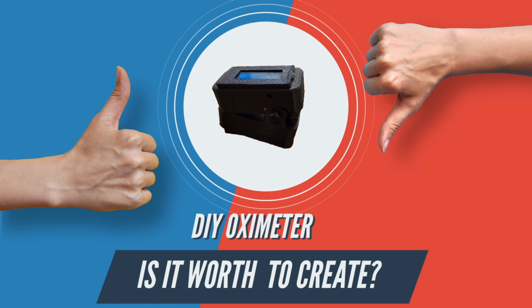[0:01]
Today we are creating a pulse oximeter by using the MAX30102 chip. So let's get started.
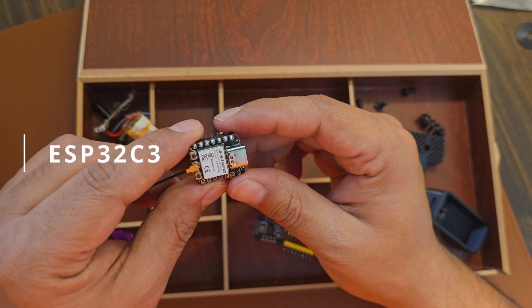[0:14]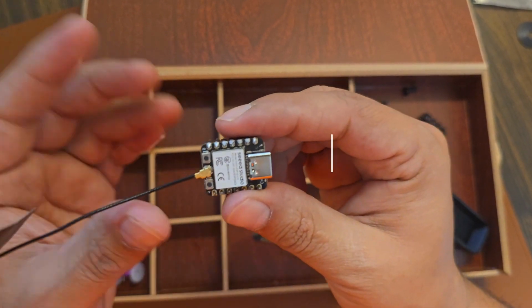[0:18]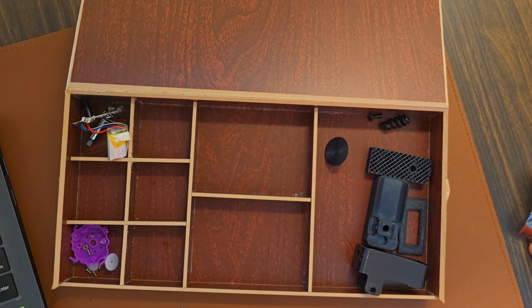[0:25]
The first component is the C3 Xiao chip, a microcontroller which is compatible with the Arduino board, and you can program it through Arduino as well as MicroPython. I am using it because it's very small and compact.
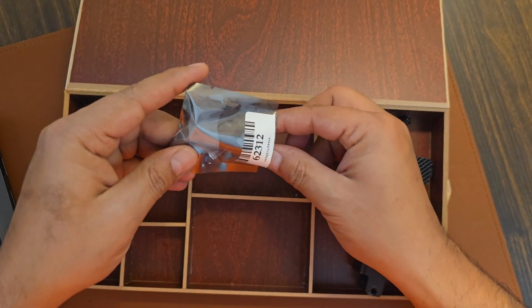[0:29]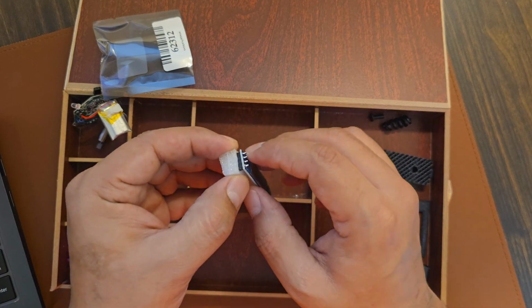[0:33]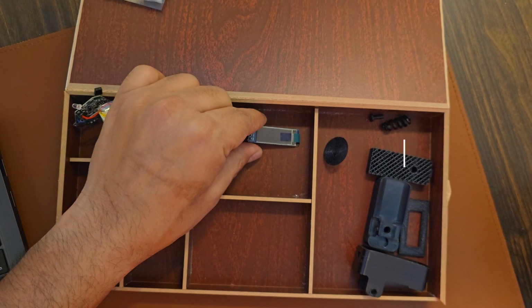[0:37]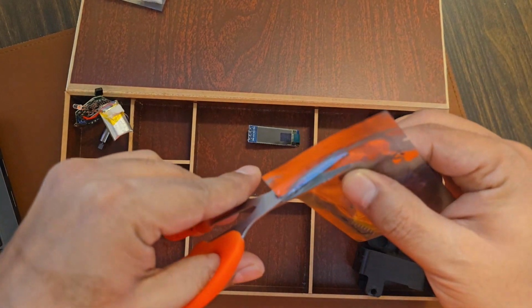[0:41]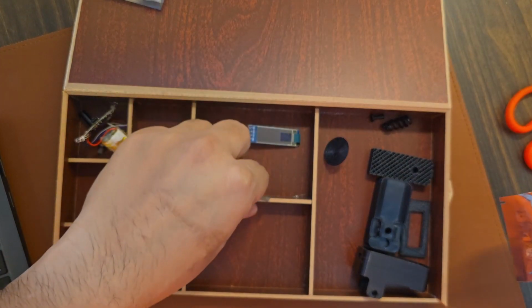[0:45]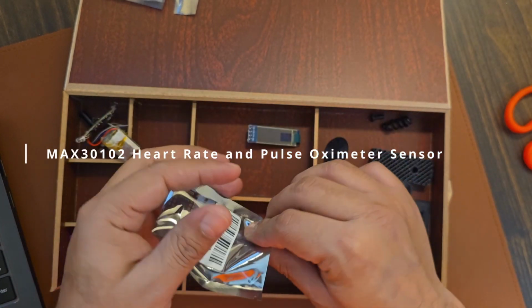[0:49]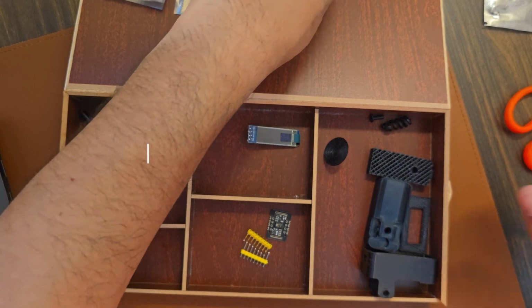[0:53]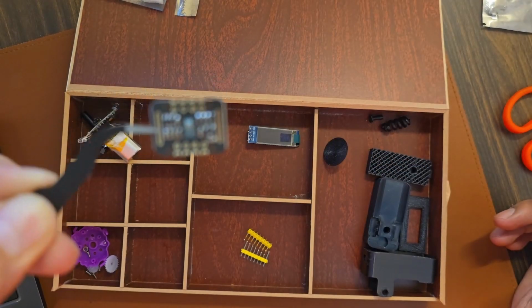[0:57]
Our next hardware is an OLED display, which is 128 by 32 in size. It's used for displaying any content from coding. And our third and main hardware is the health sensor, which is the MAX30102 heart rate and pulse oximeter sensor, which is used to read from your finger your heart rate and the oxygen level of your body.
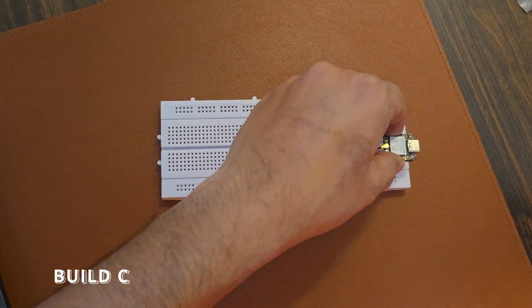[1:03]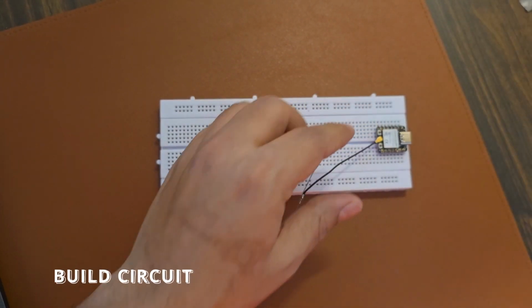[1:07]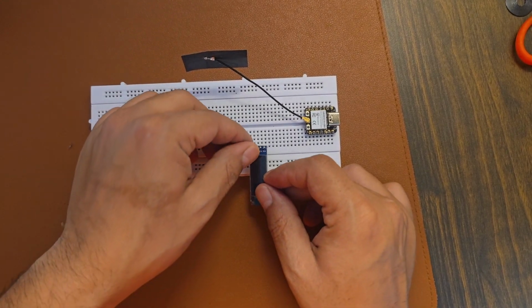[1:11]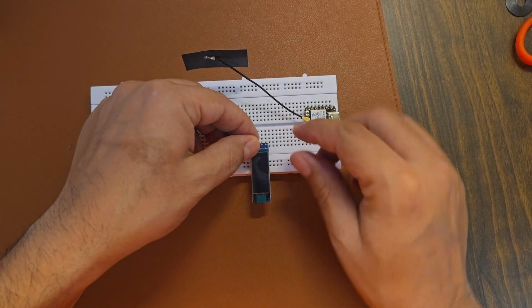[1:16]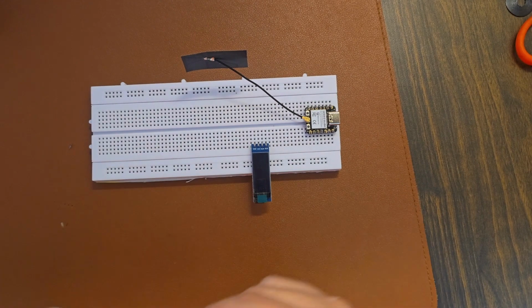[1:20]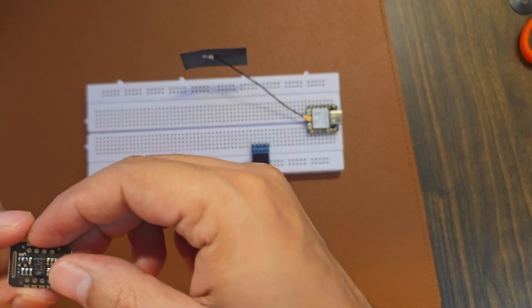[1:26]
Let's build the circuit of all of these devices so that they can communicate with each other. I'm taking a breadboard which is fitted with the Xiao chip and the OLED display. And then add a MAX30102 sensor so that we can read the sensor data and show that data over the display.
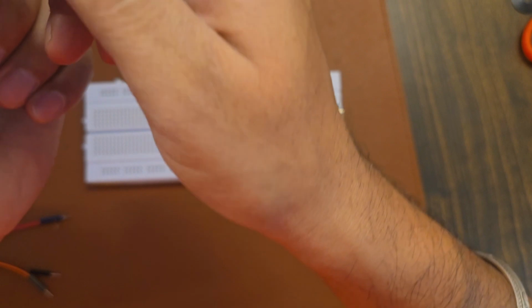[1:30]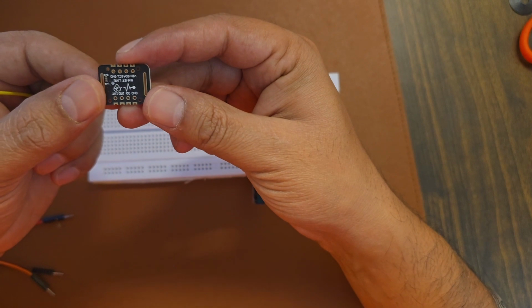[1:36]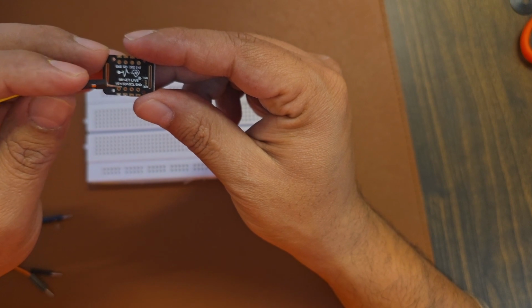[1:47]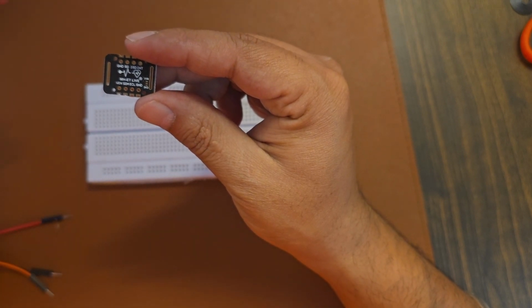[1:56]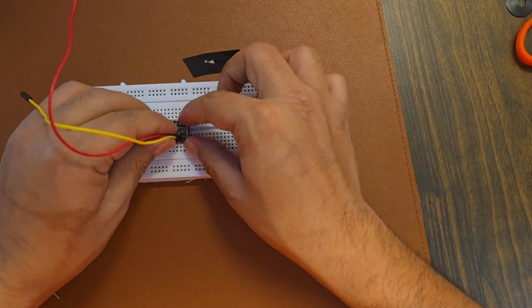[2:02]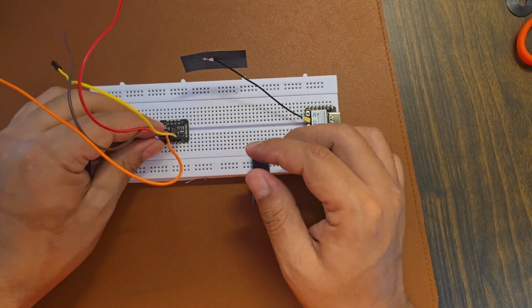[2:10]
So I'm taking some jumper wires, and I want to connect those jumper wires with the specific ports, you can say pins, and we do have four pins on this MAX30102 chip. I am adding the jumper wires first to the MAX30102 chip. Yellow for SCL, red for VCC, orange for SDA, and brown for ground.
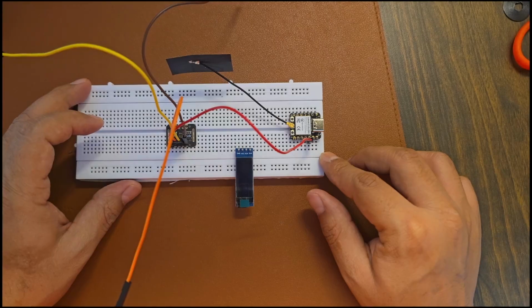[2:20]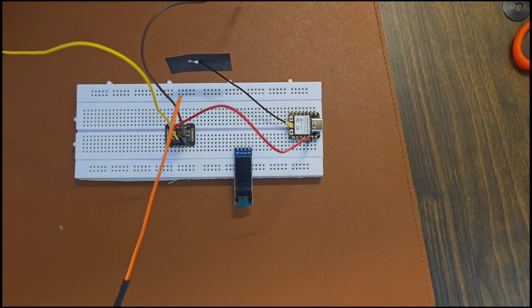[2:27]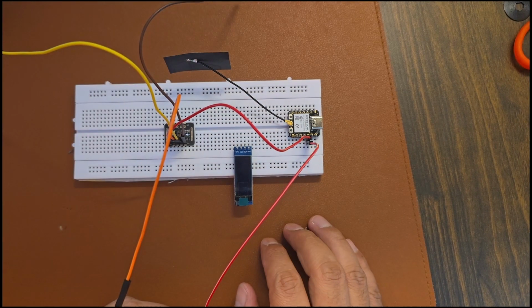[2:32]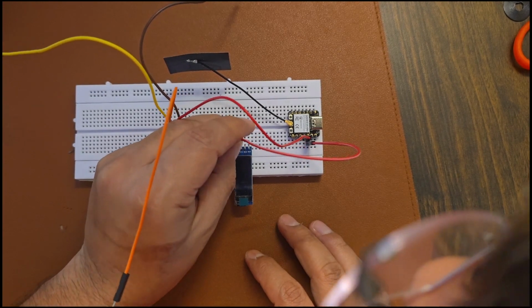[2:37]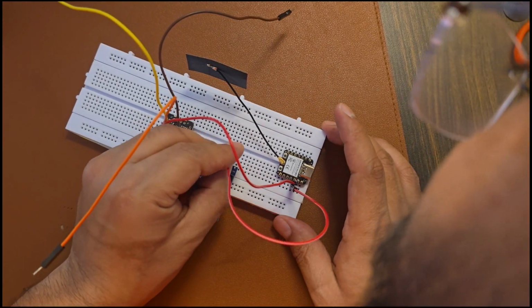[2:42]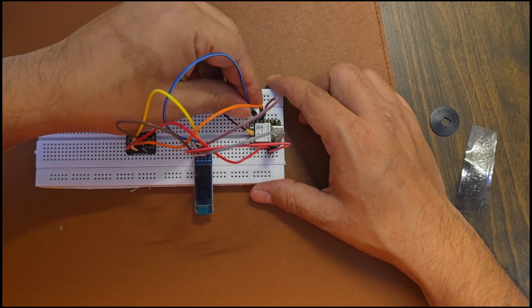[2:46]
Then connect the pulse sensor with our Seeed Studio Xiao microcontroller, the 3-volt pin to VCC, and the orange and red pins to the VCC of the display as well, and the other display wires which are VCC, SDA, SCL, and the ground pin. Let me finish all the jumper wire connections so that we can start working further with the coding part.
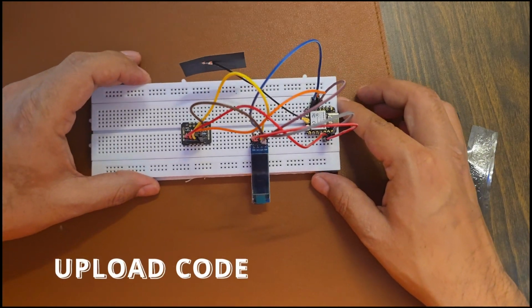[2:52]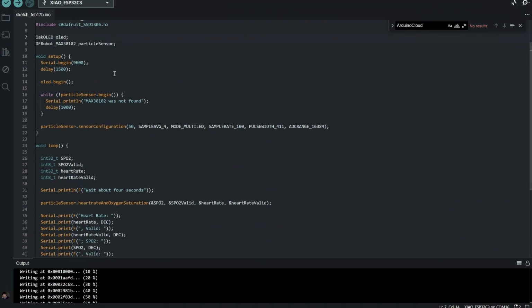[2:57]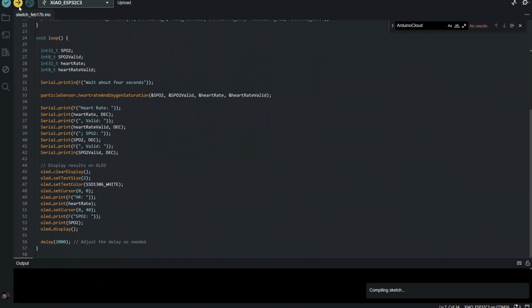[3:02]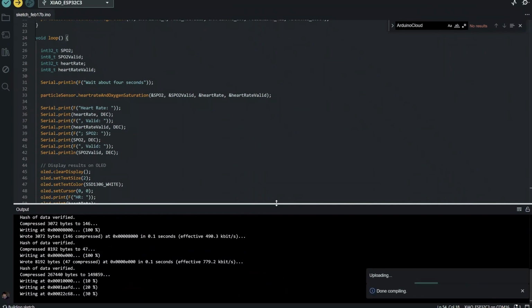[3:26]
So let's upload the code to our Seeed Studio microcontroller using the Arduino IDE, and I am uploading the code by clicking the upload button. I will share this code in my Git repository, and you can find the link of the Git repository in the description. You can copy paste it. You can select the board and pins in Arduino so that you can connect with the Arduino using a COM port, which is USB based, and just hit upload, and it will upload your code directly to the microcontroller, and you can see the execution there.
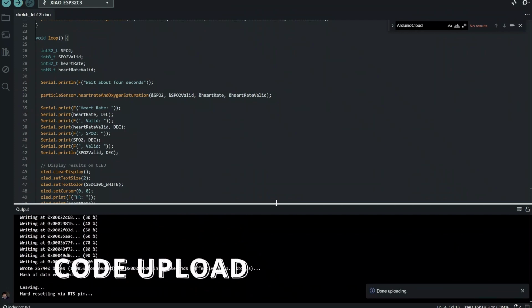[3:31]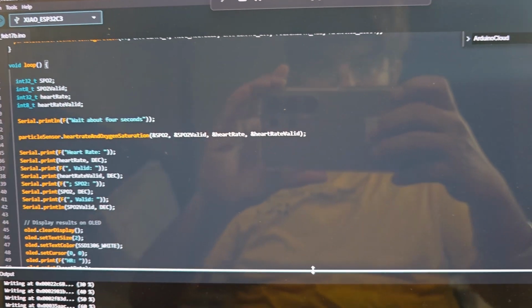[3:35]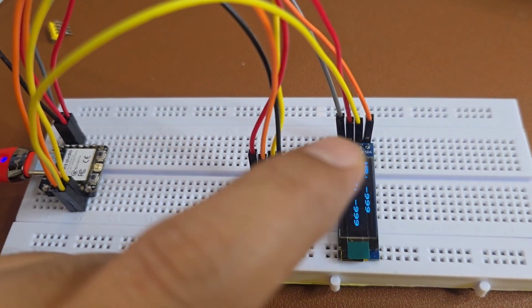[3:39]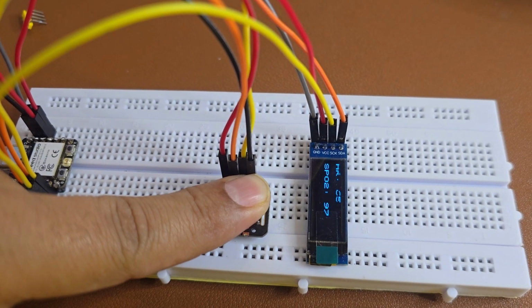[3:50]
So let's see the execution in action. I uploaded the code to the microcontroller, and you can see the display showing the heart rate and SpO2 value, -999 if there is no finger there, but whenever I add my finger, it gives me the heart rate and the SpO2 value, which is the oxygen value for my finger, and you can say my body.
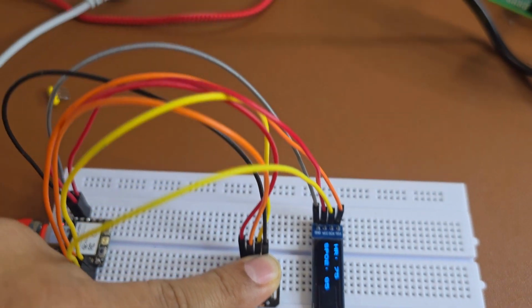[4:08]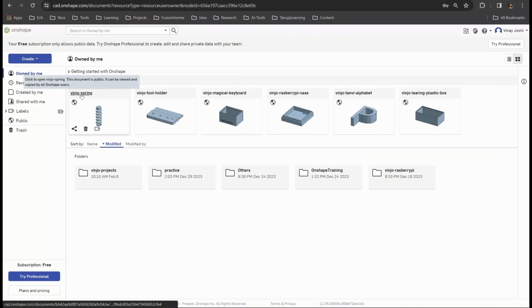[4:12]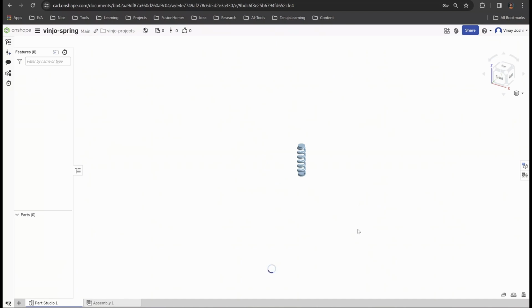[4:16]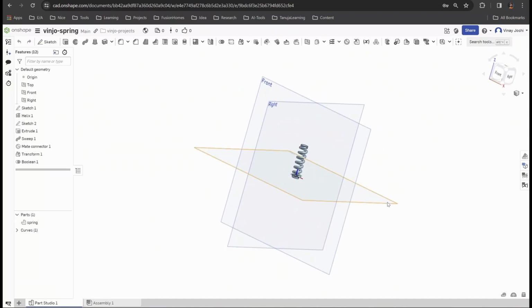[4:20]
I was not able to find the spring used on this part, so I 3D printed the spring as well on my 3D printer, the Ender 3 S1 Pro. Before that, I designed an STL file in Onshape. You can find all the STL links in the description, which is part of the blog.
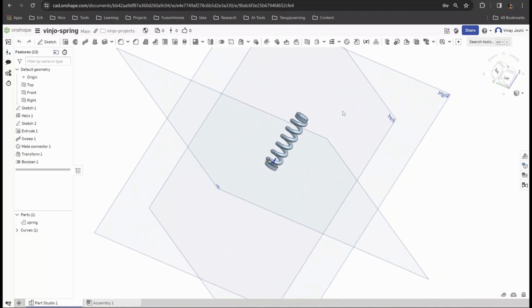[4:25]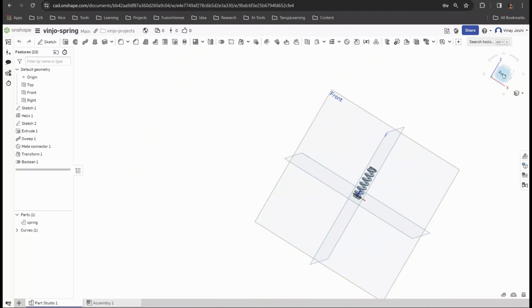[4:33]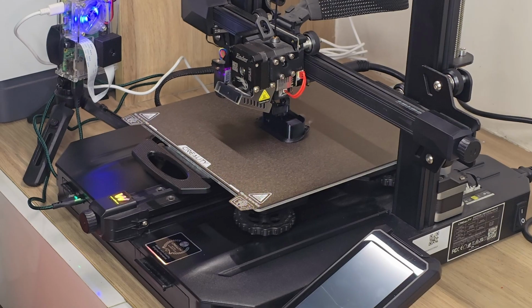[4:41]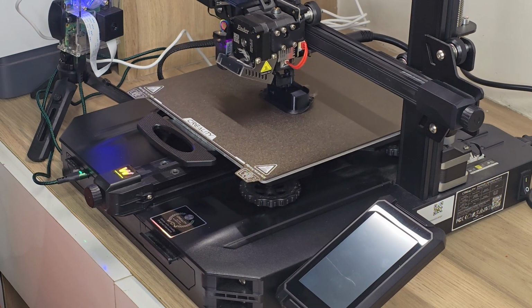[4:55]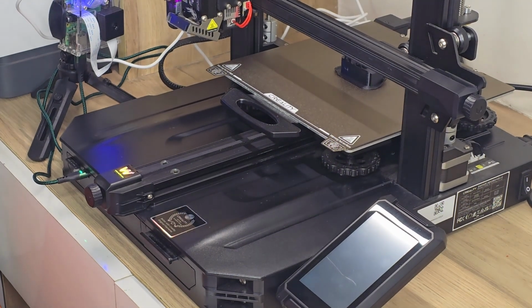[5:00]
But yeah, if you want the spring STL file, you can directly go to the Onshape library and get my STL file, or you can design it or modify it as per your 3D printed enclosure part for these electronics so that they look good, and we can use this in a proper way. Here's my part printed completely, and before using it, I need to clean up all the parts, so I do have some techniques to do it. So let me fast forward my video so that it will not take much time for you to look at the whole process.
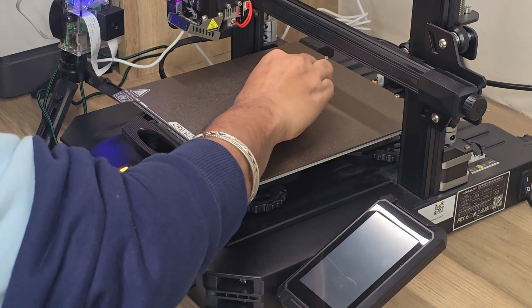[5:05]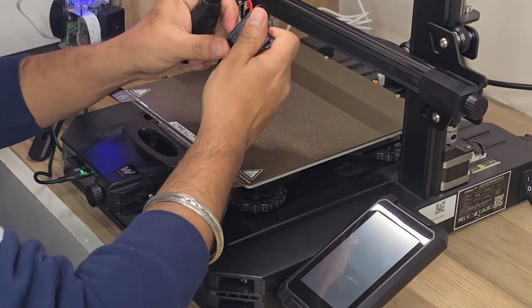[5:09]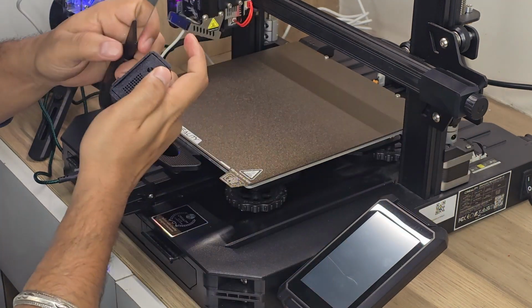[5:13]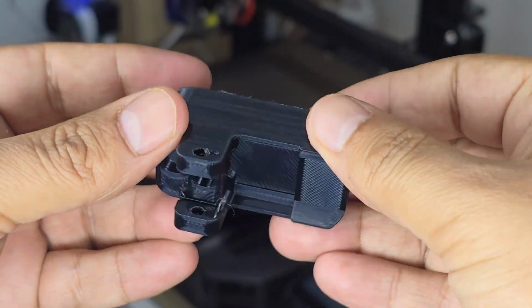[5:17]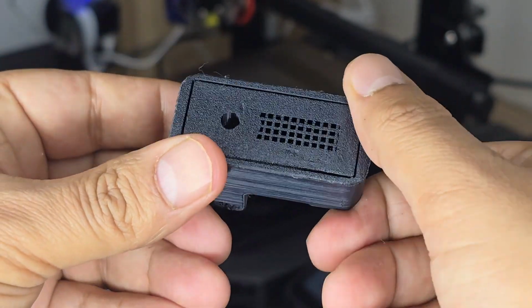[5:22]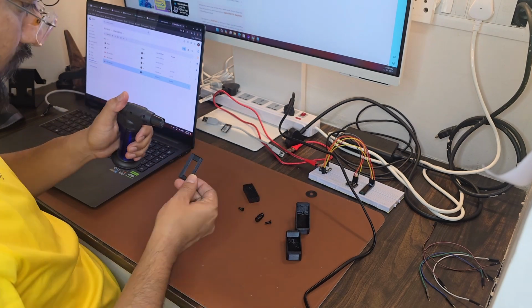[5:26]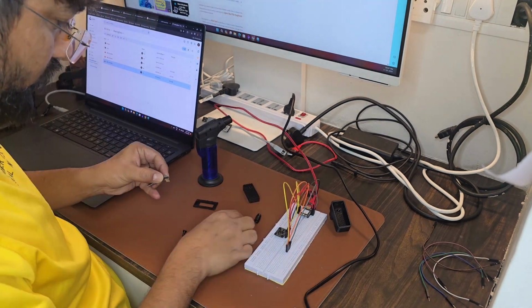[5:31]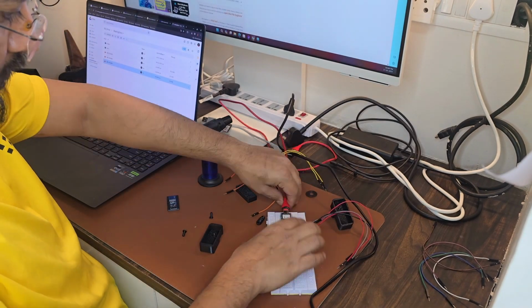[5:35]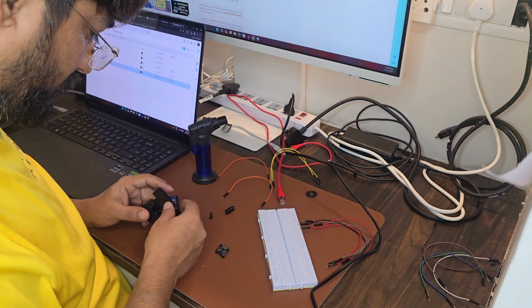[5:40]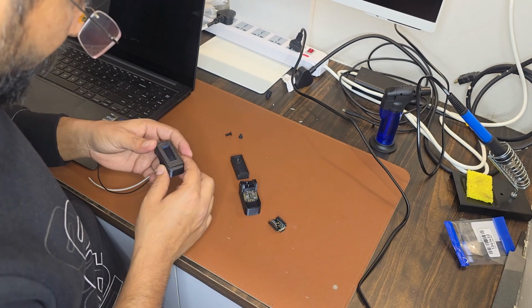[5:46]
So let's start the assembly of all of the parts which we 3D printed. First, I need to clean them with my gas lighter so that all the feathering which comes along with the 3D printing will be removed, and our 3D printed case looks very shiny and fine. I do that for all of the parts and then remove all of the parts from my breadboard and add them to fit over those.
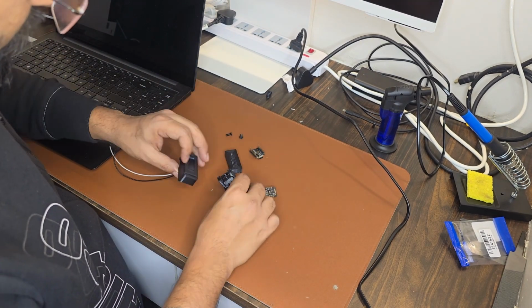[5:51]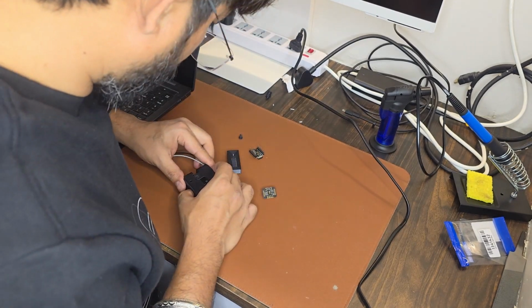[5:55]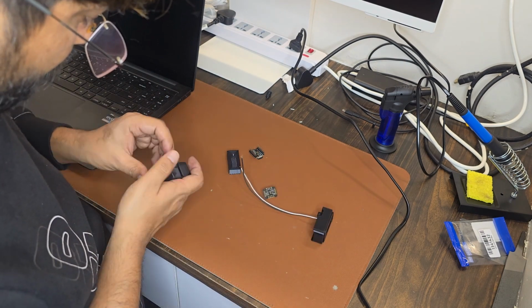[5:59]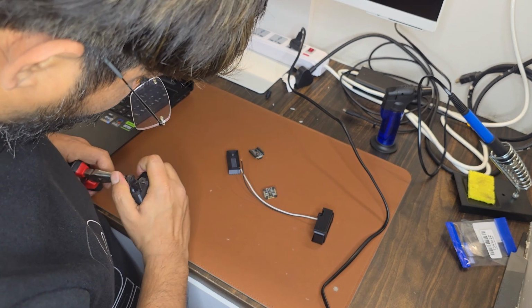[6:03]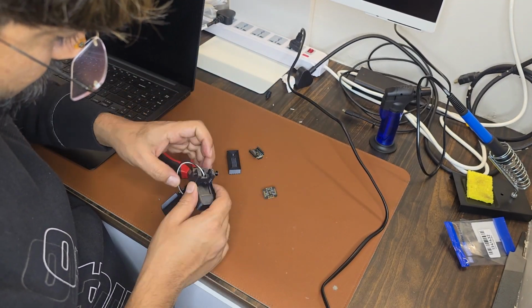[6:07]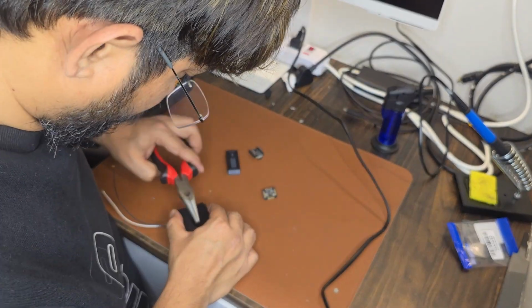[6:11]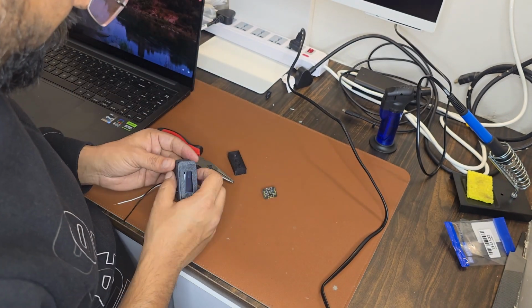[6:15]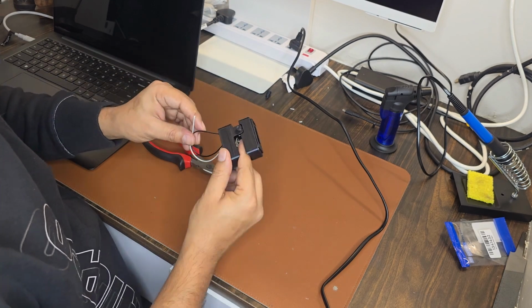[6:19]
I am assembling all the parts which we need to add over the screw, upper case, lower case, and fitting the microcontroller with the sensor within the enclosure so that it will work perfectly. The display is on top, we will fit that, and within those we are adding wires so that the modules can communicate with each other and send data between them. In future I will be adding a battery so that it will run on the battery only.
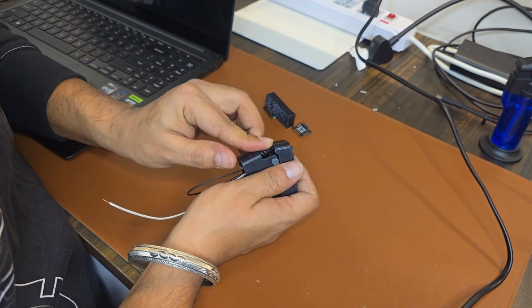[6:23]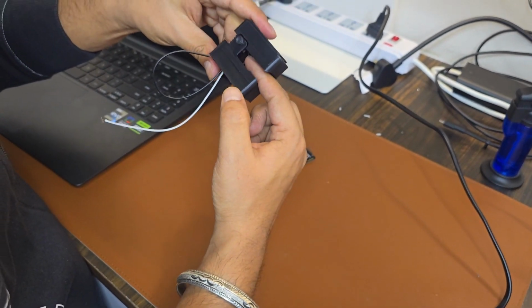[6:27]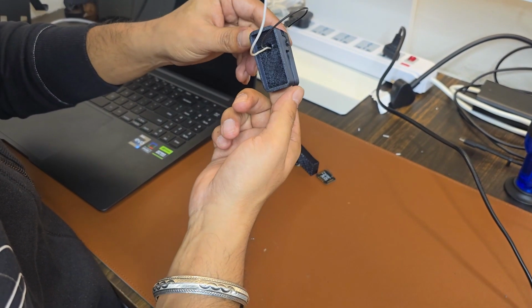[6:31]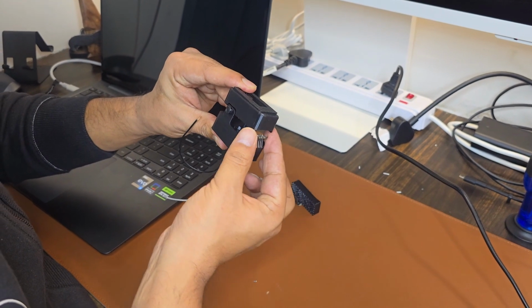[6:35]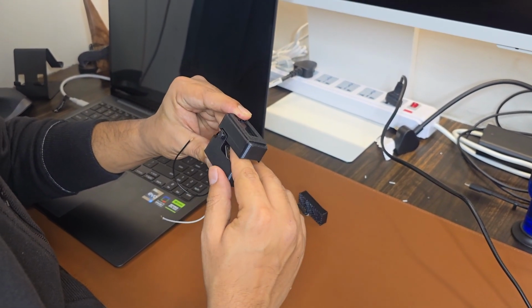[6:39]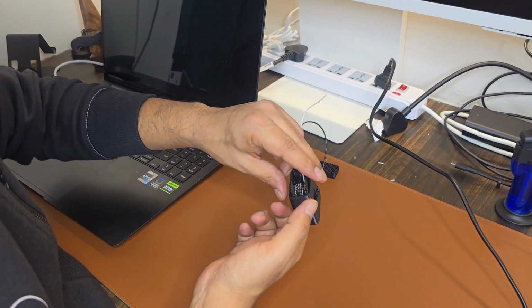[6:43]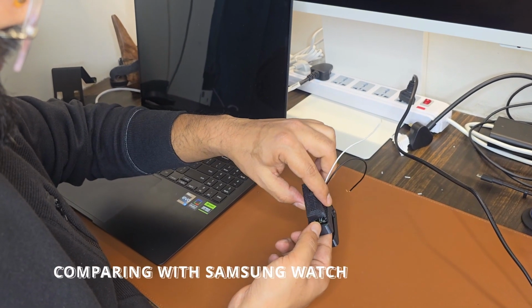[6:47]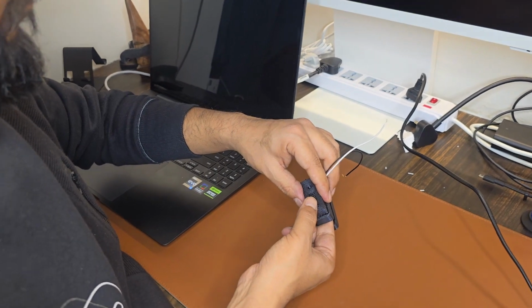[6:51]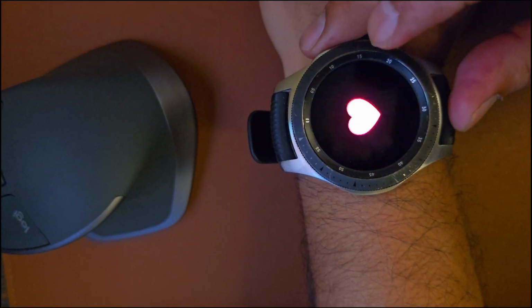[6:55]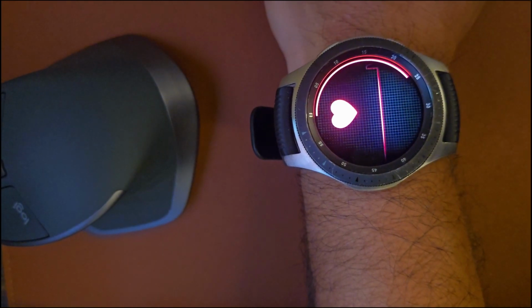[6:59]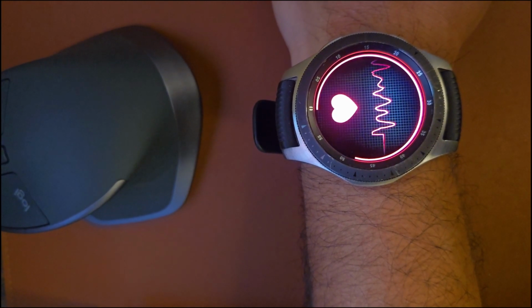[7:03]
So this is our final product, and here you can see all the components are merged together. I need to fix the wire between the sensor and the microcontroller so that it can work right. And I do have one comparison between this module and my Samsung watch, which is showing the oxygen level and heart rate as well. So here you can see my Samsung watch is giving the same reading as the one given by our oximeter.